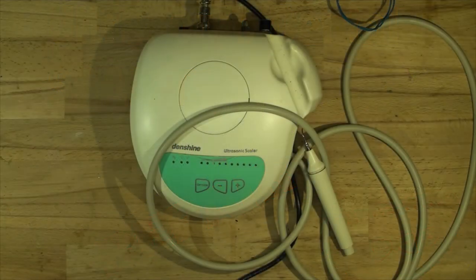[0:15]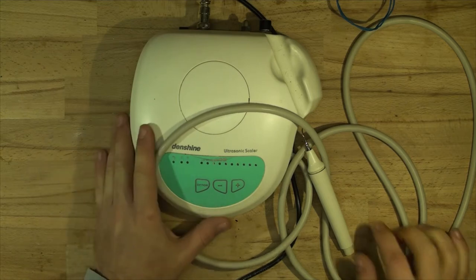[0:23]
Today we have on the bench an Ultrasonic Scaler by Denshine. This device is used for removing plaque and calcium from teeth using this tip.
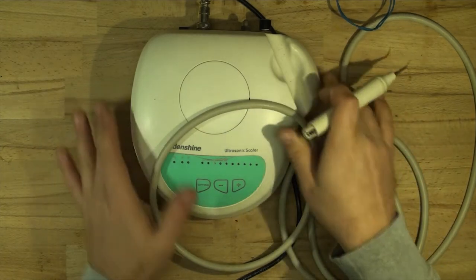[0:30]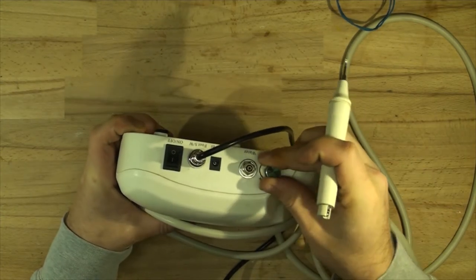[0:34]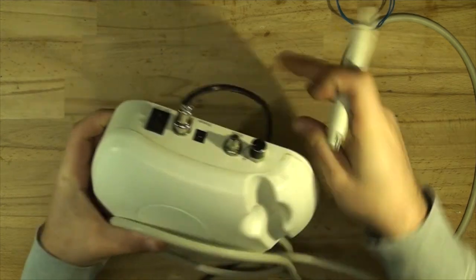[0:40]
So it's got a water input here. This is the adjustable water pressure. I would say this is more of a valve. It's not electronic, it's just like a little tap. Power button, and that's a foot switch, which is right here.
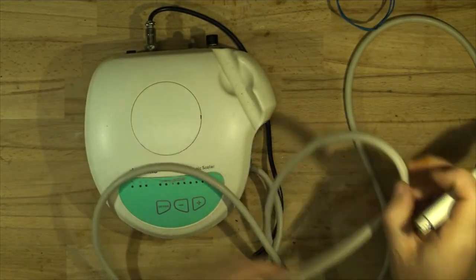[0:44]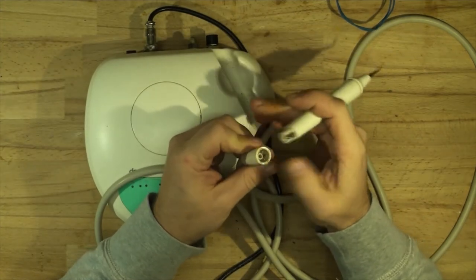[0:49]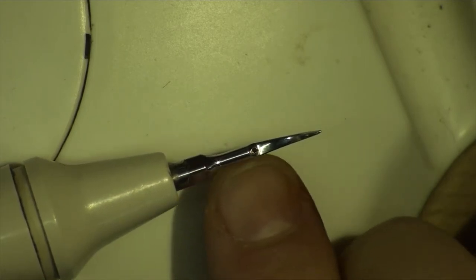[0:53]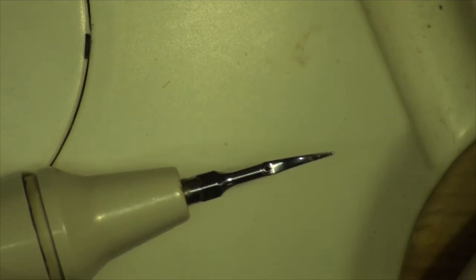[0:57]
And all this connects to this head, which has got three pins and a little water pipe. And the water comes out of the tip right here. So there's a tiny little hole there, and that vibrates at around 40 kilohertz, removing the plaque.
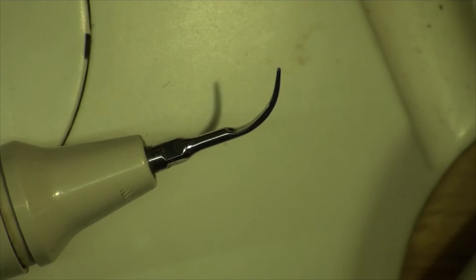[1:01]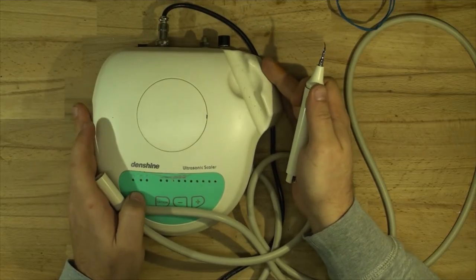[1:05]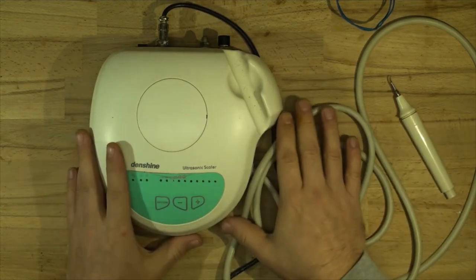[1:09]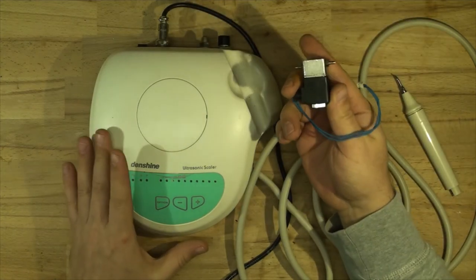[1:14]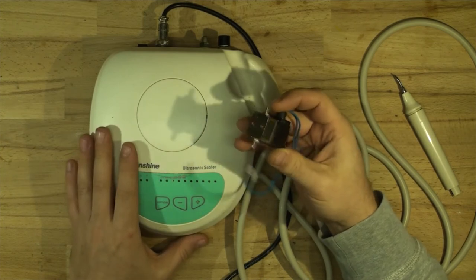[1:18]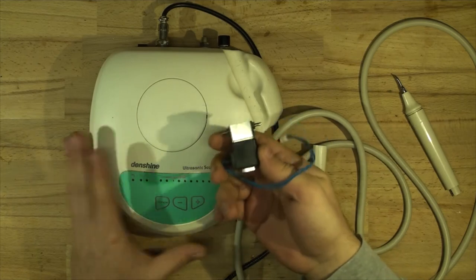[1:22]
I'm not sure if it's meant to be for human use, but this one is actually from a vet clinic. I haven't opened it up, but the doctor said there's a problem with it, and she got a replacement solenoid valve. So I don't know if the valve is the problem or what's the problem inside, but we'll have a look. So that's the valve that she bought. Again, I'm not sure what the problem is.
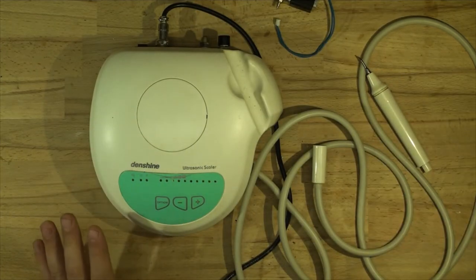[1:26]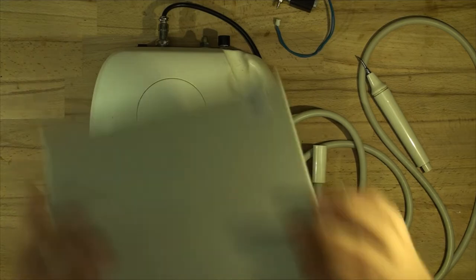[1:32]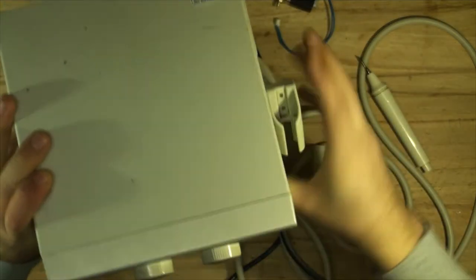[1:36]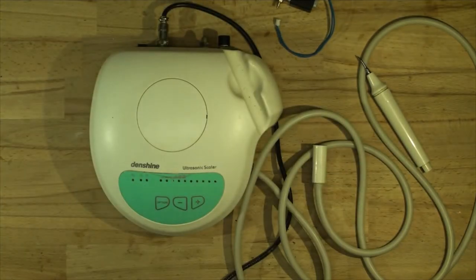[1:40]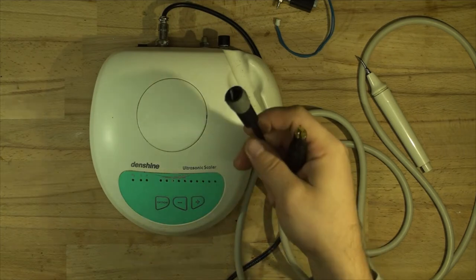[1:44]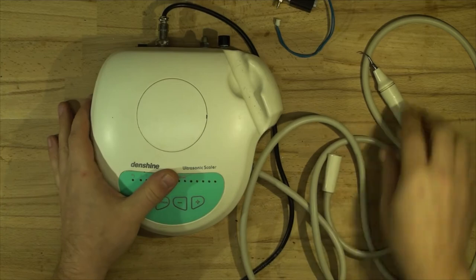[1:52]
And I have another one here, which is an older version. Let me just get it. It's bigger. It's got big controls. It's heavier, so it's obviously got a linear power supply. I can tell from the weight. The problem with that is that the little connector's broken off, so we'll have to find the pinouts for it, and we'll see if this one will work. So let's open it up and have a look what's inside.
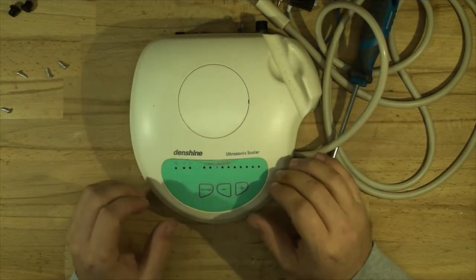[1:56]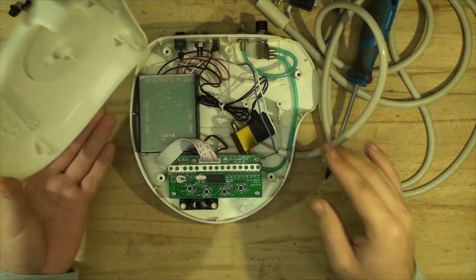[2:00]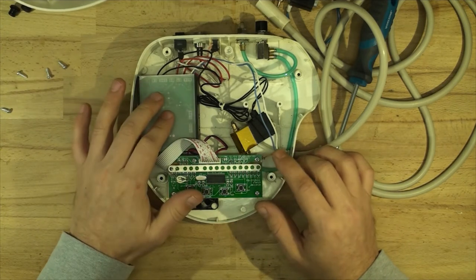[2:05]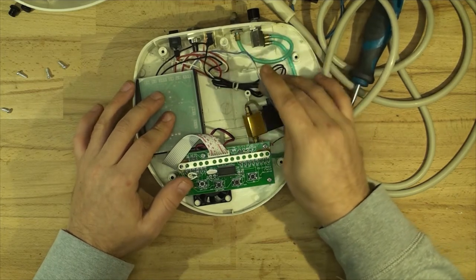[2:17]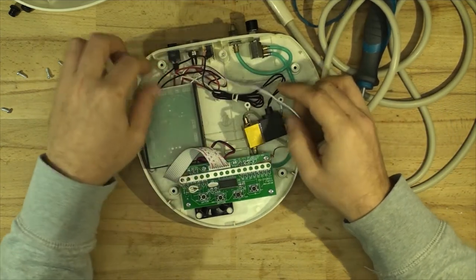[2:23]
I've removed all the screws, and I haven't taken this off, so we're going to be taking this off together. Oh, so by the look of it, we've got a switch mode power supply. We've got that solenoid valve, which is just loose for some reason. It shouldn't be loose, but it is. It looks like the correct one, but I don't know if there's a problem with it. We'll have to test it out.
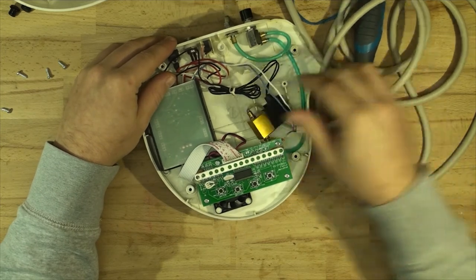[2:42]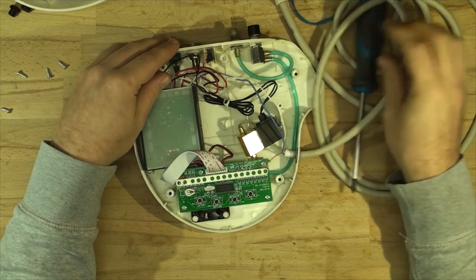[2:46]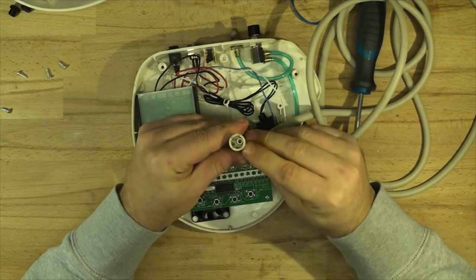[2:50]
What else do we have here? Two wires. There are three contacts, however, on this thing, and no ground. This looks like just a little rope to make sure that you don't overstretch it. So that's the power supply for the head itself. I've also noticed that there is a corroded connection inside, so we'll clean that up.
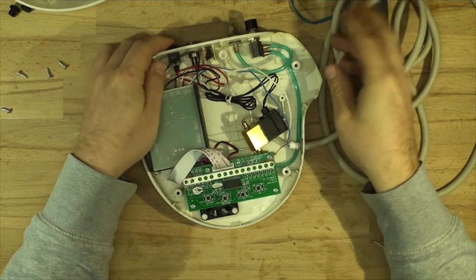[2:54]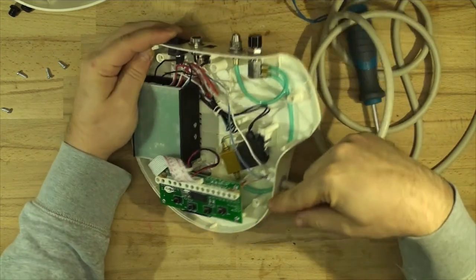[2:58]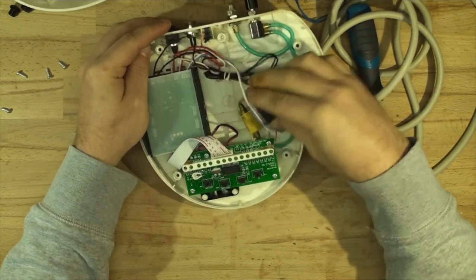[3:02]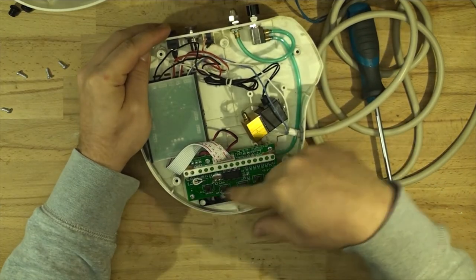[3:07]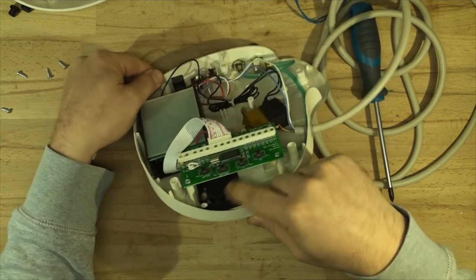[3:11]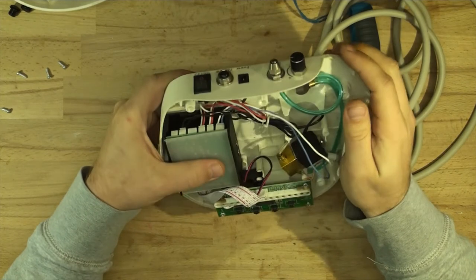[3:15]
Water comes in, goes through this little mini tap, and goes to this valve. And from the valve, it goes straight to the nozzle. This is the controller that controls the actual volume. There's a little fan underneath here. Actually, everything looks in good shape. So that's definitely a switch mode power supply.
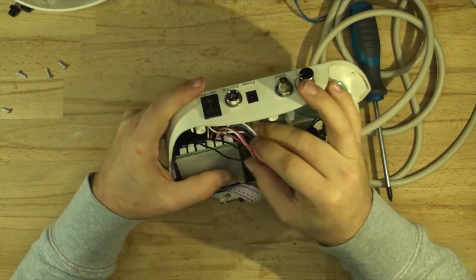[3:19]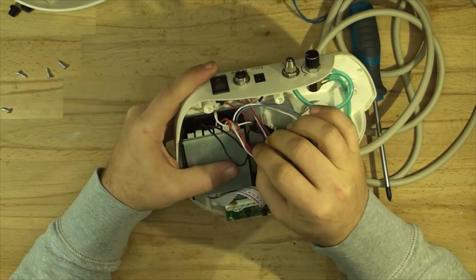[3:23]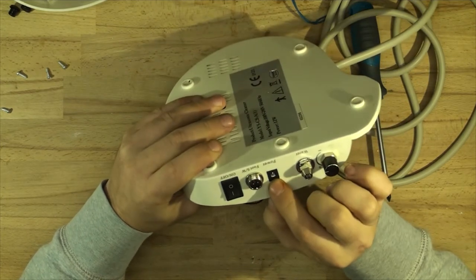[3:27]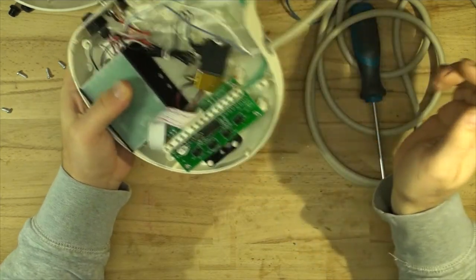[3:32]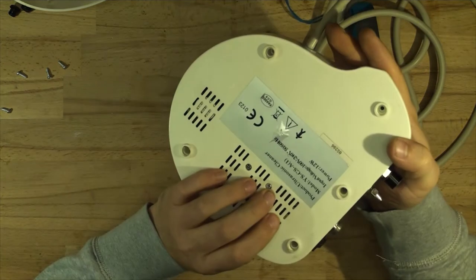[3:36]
Foot pedal. It's got a lot of connectors. It looks like it's a universal one. You can also connect. That's the power. So we do need a power supply. It says 240, but obviously it's not 240. I wonder what the power is. 12 watts.
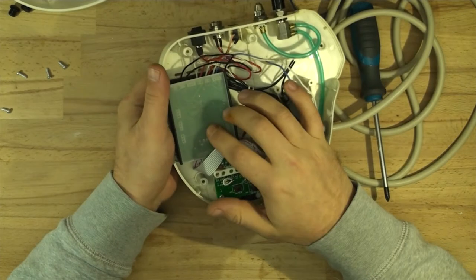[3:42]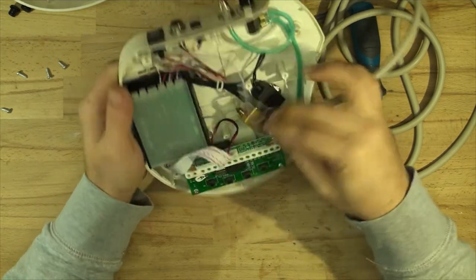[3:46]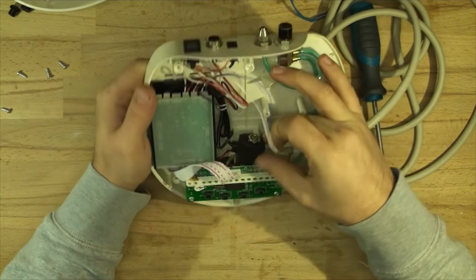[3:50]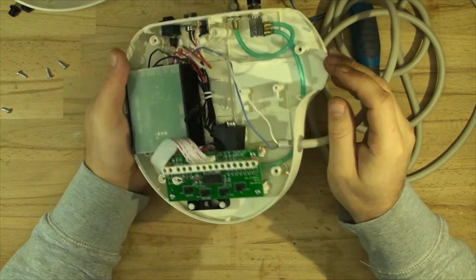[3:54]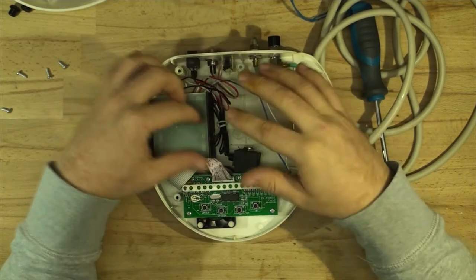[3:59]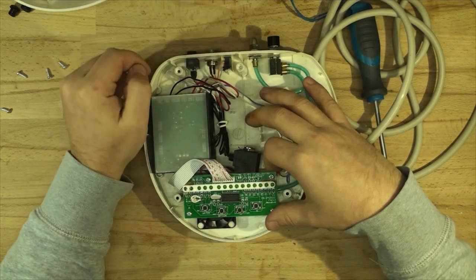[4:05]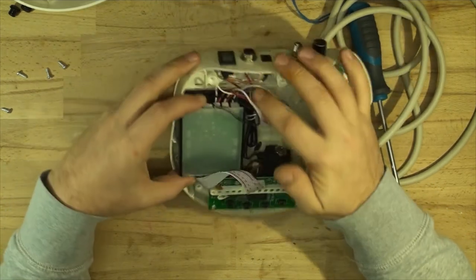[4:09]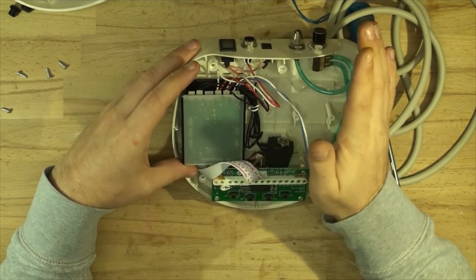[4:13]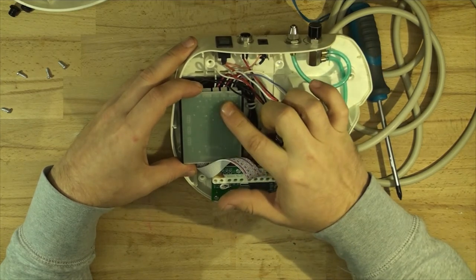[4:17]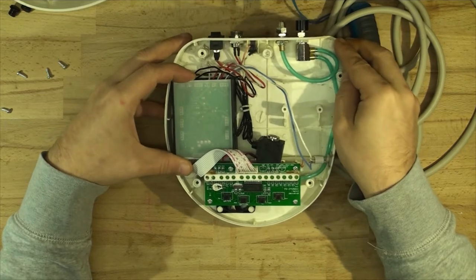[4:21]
I can probably have a look inside at the capacitors and see what sort of power supply there is. Yeah, that looks like it. So let me just open this up and have a look at what power supply this should be. I reckon it's maybe 12 or 24 volts. How I will determine it is I'll have a look where the input is and where it goes to. If it goes straight to a capacitor, that means we've got a DC voltage. If it goes through a bridge rectifier, that's an AC voltage. Then you have a look at the value of the capacitor and surrounding components, and you can determine what the power supply is supposed to be for that thing.
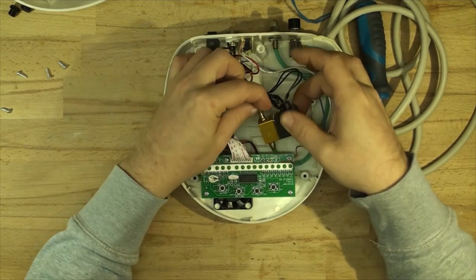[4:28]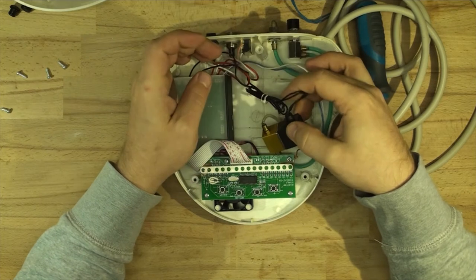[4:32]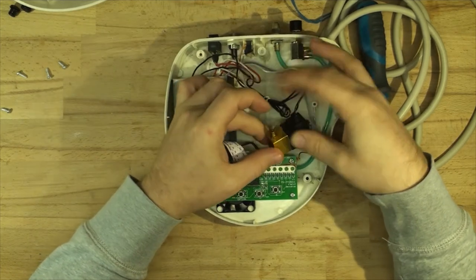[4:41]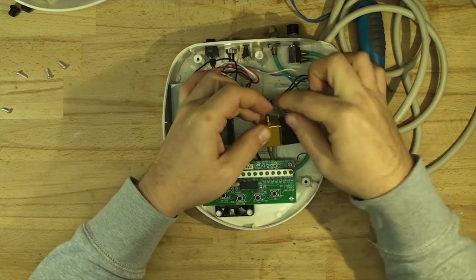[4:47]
The next thing we're going to do is check this solenoid valve, which is very easy to do. Just blow in one side and see if it leaks. If it doesn't, apply power to it, probably separately, and see if it opens up. If it does, then the solenoid valve is good. Obviously, that tube is crinked up, and that needs to be cut off and probably reseated there.
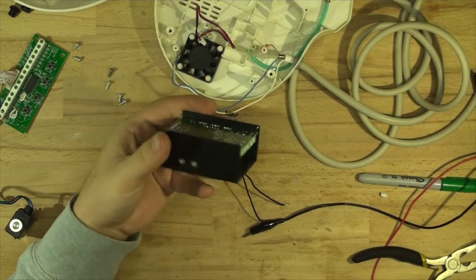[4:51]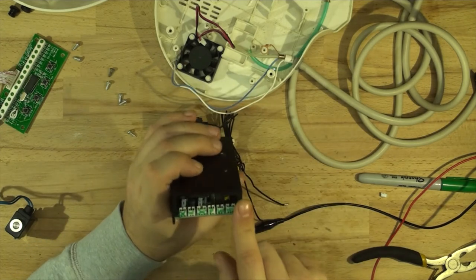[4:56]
Here's the power supply out of the enclosure, and it's safe to say that this power supply is 24 volts. The main input goes straight to the capacitor, and that means it's DC voltage. And also the caps are rated at 50 volts.
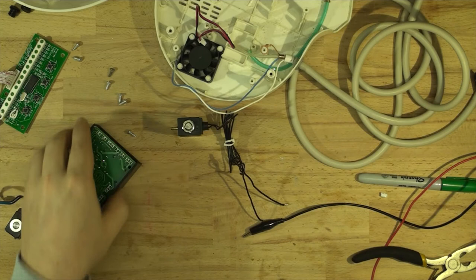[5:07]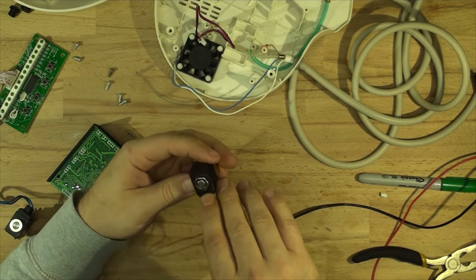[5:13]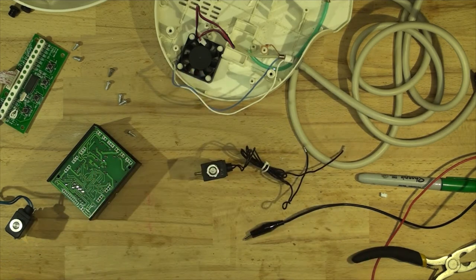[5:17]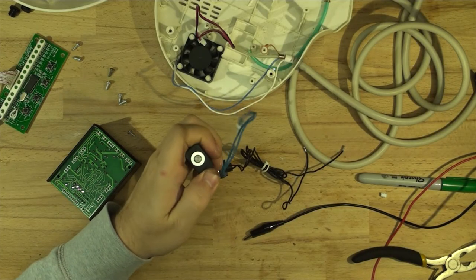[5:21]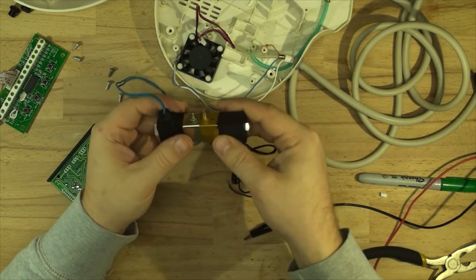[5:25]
The other little hint that we have is the solenoid itself, which I have removed and we're going to test in a second. It says on it DC 24 volts. So obviously the device is 24 volts. This new solenoid, however, I've noticed says DC 30 volts. So that may not be suitable. And also, if you compare, it doesn't really fit.
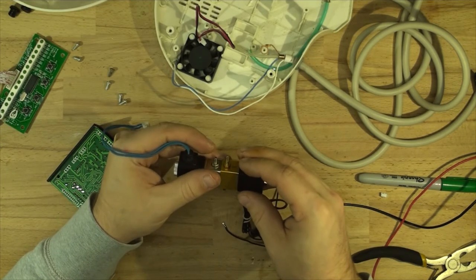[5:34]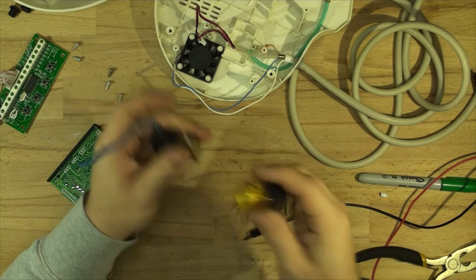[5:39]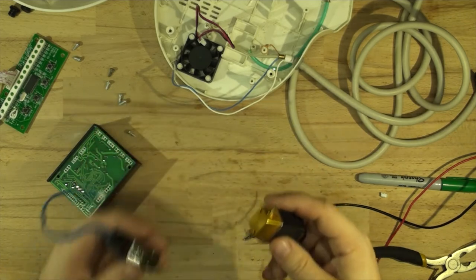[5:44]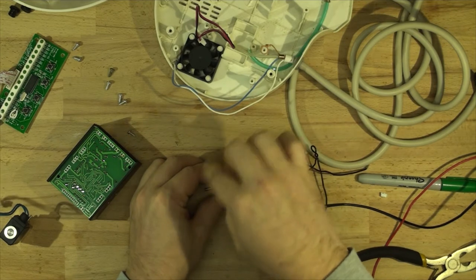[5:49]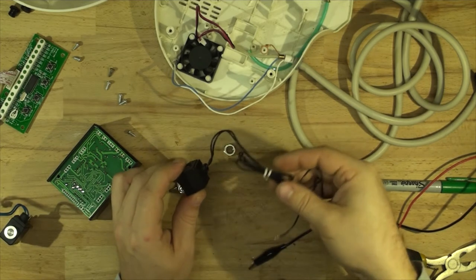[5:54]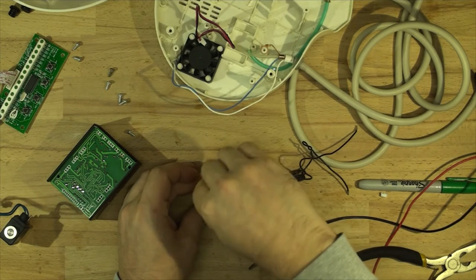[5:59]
First of all, the hole diameter is a lot smaller on the new one. The output tube size is the same, but the input tube is larger on the original, and that would have a lot more water flow through it because the output tube's diameter is a bit large as well. Those electromagnets are removable, and we're left with just a solenoid. So we're going to be keeping the original electromagnet. First, let's test if it works. I've got a 24-volt DC power supply, and we'll hook it up and see if it clicks.
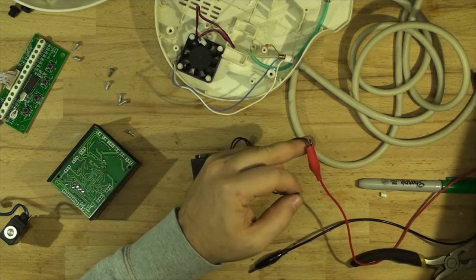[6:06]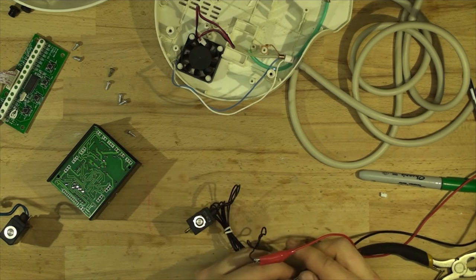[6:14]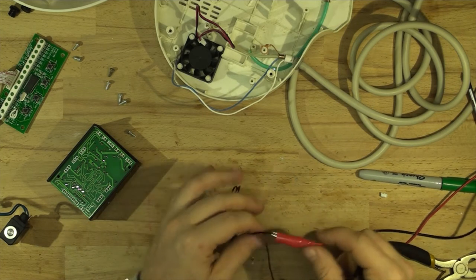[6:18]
All right, so here we go. Yep, the solenoid works. Excuse the heater in the background. Just turned on, it's been freezing cold here.
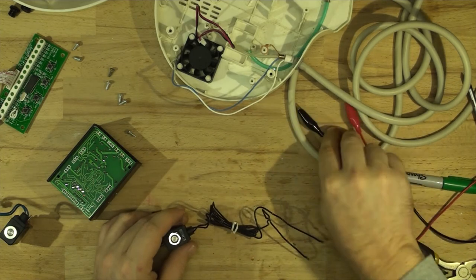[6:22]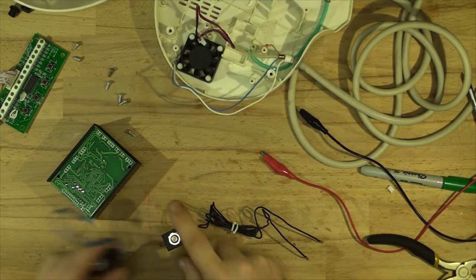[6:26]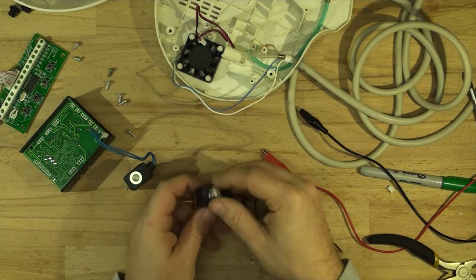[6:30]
So let's get the solenoids apart. I'll take the coils off. Let me turn the heater off. So let's take that electromagnet off. And I'll probably be using this nut. It's actually more, it looks like...
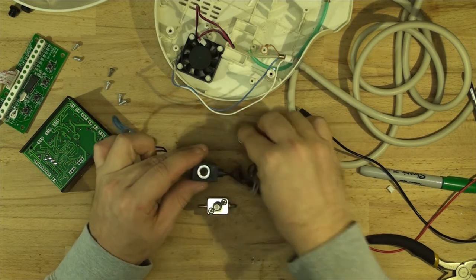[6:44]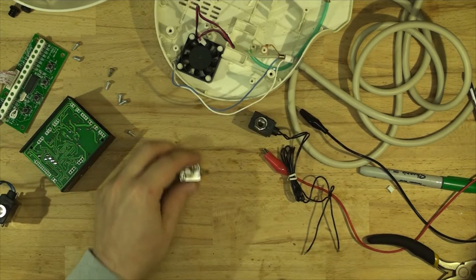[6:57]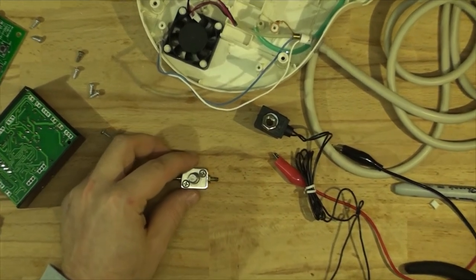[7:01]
It looks like someone's already been inside this solenoid because the nut was the wrong way around. It was this way up and it was threading into the plastic, which should be this way, because you can see it's got that little lip. So we'll pull apart this existing solenoid and we'll have a look. I'll zoom in for you so you can see better what I'm doing.
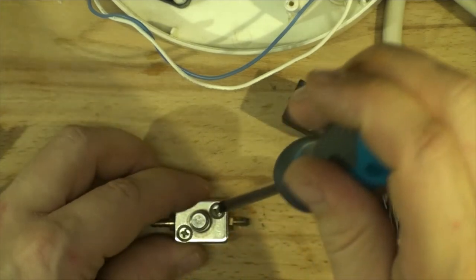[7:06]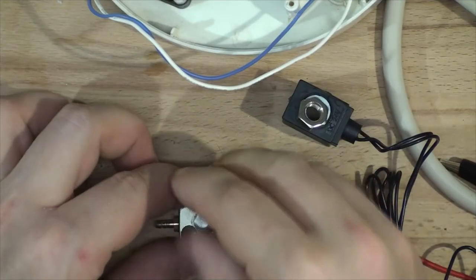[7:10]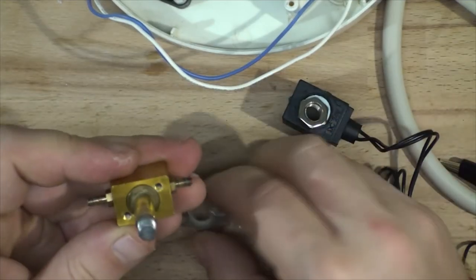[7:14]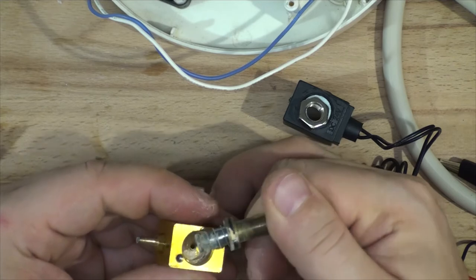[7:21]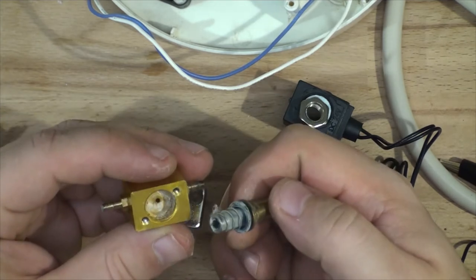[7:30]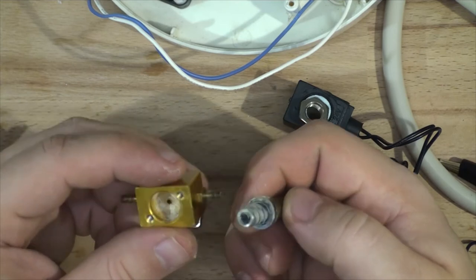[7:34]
And let's have a look what's inside. It probably just needs cleaning. I doubt it's faulty. So we'll carefully remove the top. And it's all gunked up. As you can see, the solenoid is good. It's just very, very filthy dirty. So we'll clean this all up, and that should be working just fine.
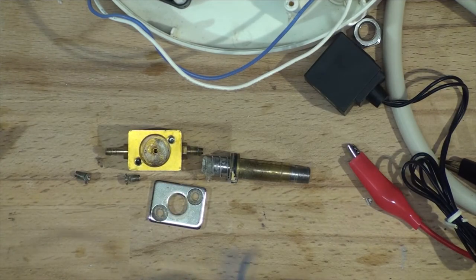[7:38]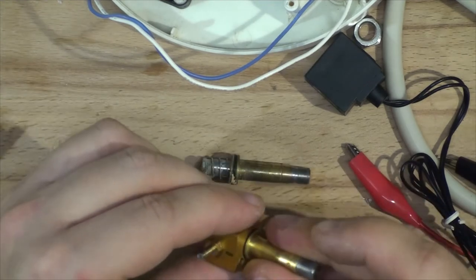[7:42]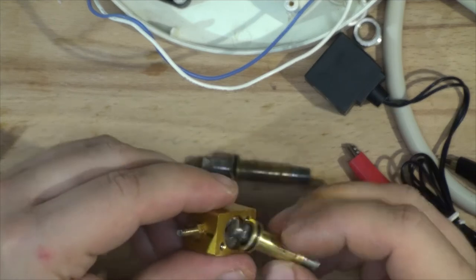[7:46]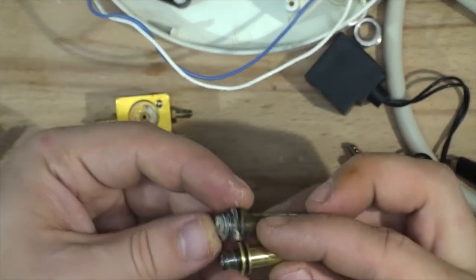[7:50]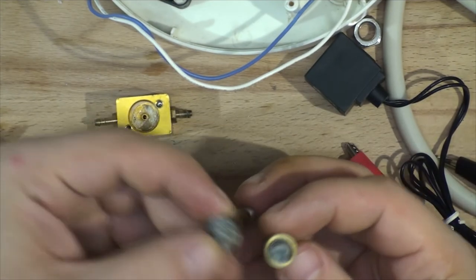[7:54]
Well, let's pull apart the good solenoid. Obviously, the coil we won't be using. So it looks... yes, it looks like it's just a direct swap. They look identical. Same size, same valve, same everything.
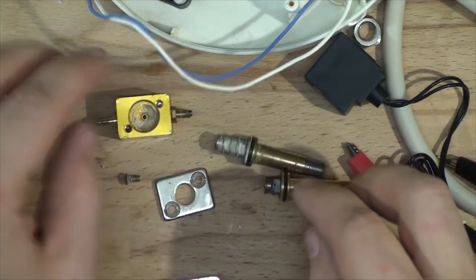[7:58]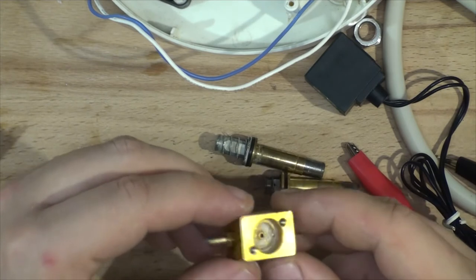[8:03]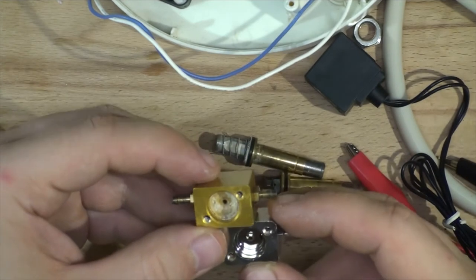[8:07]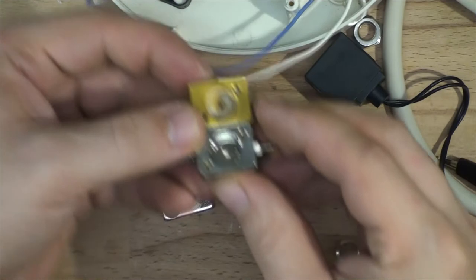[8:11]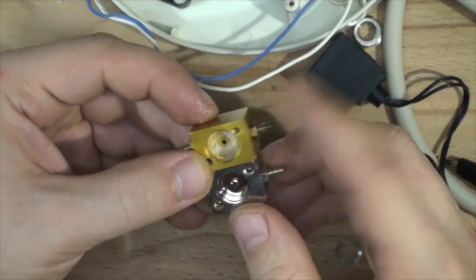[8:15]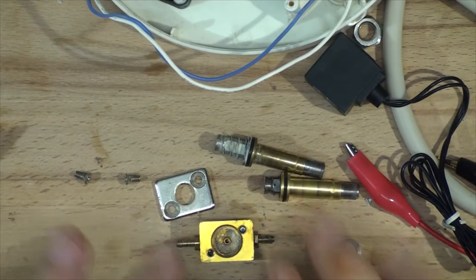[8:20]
So what I will be doing then, I will be cleaning this body. It's definitely clogged up with all sorts of stuff in there. That's a new body. And yeah, the diameter of the hole is definitely larger in the older one. So that's why we will be using the old body. So I will clean this all up and I'll return.
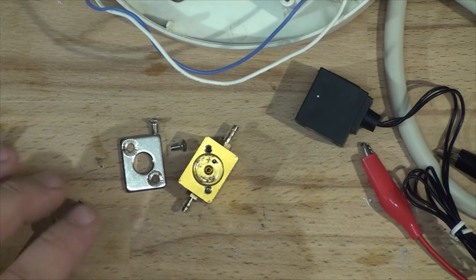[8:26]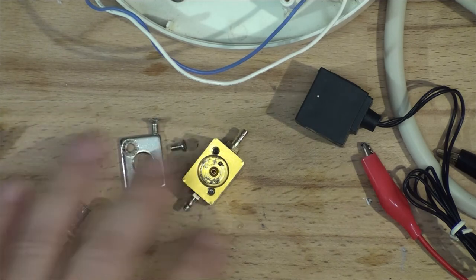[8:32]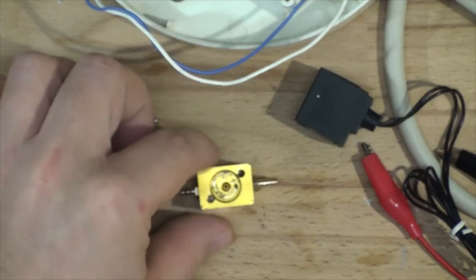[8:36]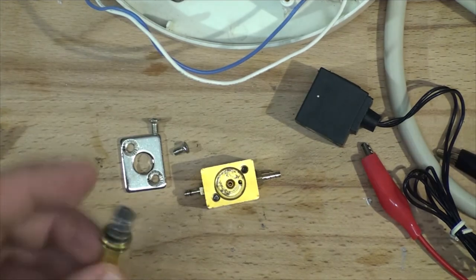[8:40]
I've submerged the whole assembly, the whole block and the lead in a CLR, which got rid of all the calcium buildup. I've verified the flow, it's flowing well. There's a bit of a discoloration inside, but that's just aesthetics. So what I'm going to do, I'm going to take this new valve and put a little bit of oil around the rim. This will help it seal better. Just a finger rub.
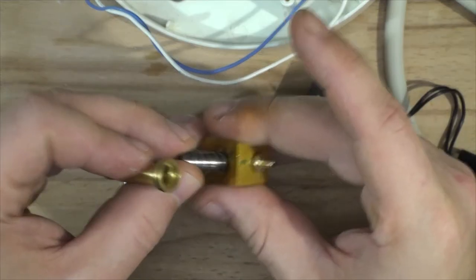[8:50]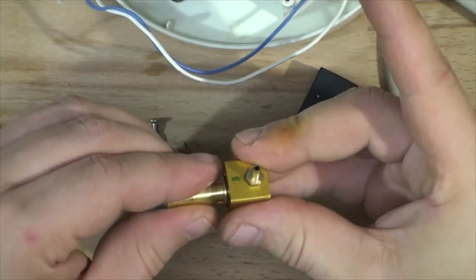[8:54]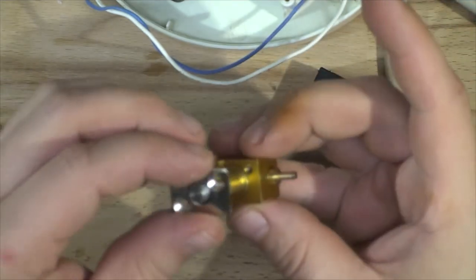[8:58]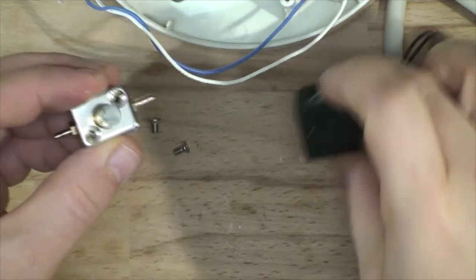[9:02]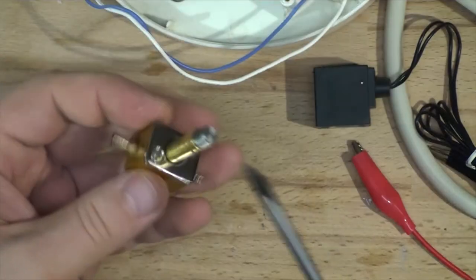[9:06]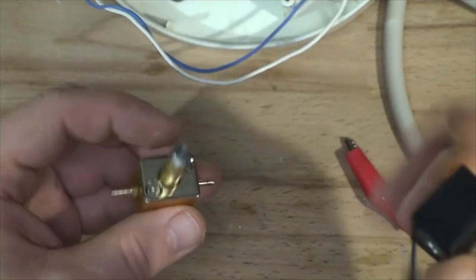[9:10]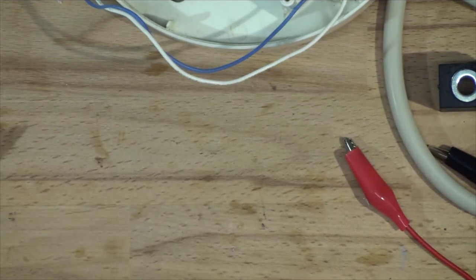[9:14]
So let's assemble it. And I've got the new screws from the new coil. That'll look really nice. Make sure the screws are nice and tight. So I'm just gonna blow in it just to verify. Yep, it's sealed.
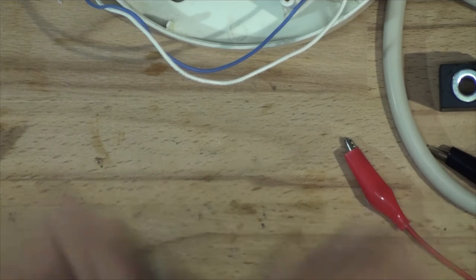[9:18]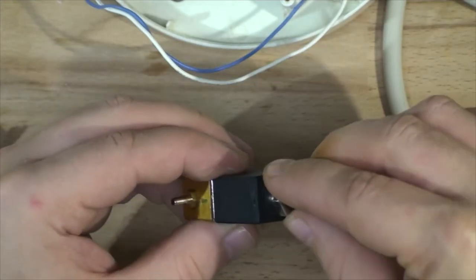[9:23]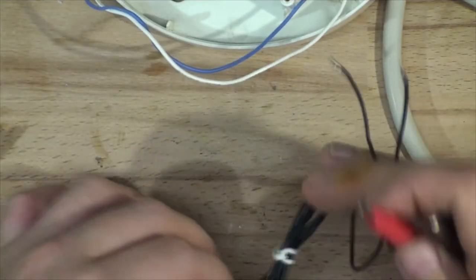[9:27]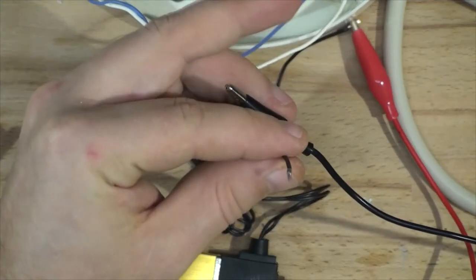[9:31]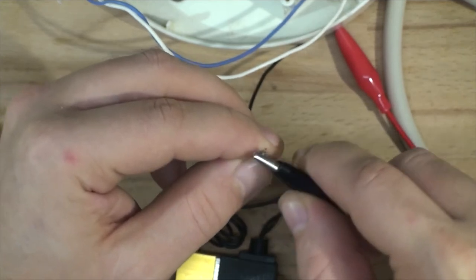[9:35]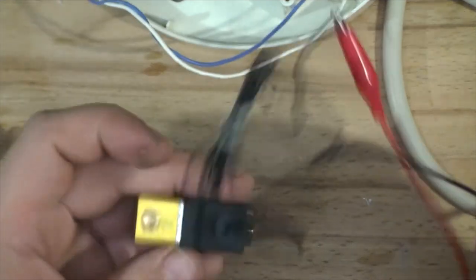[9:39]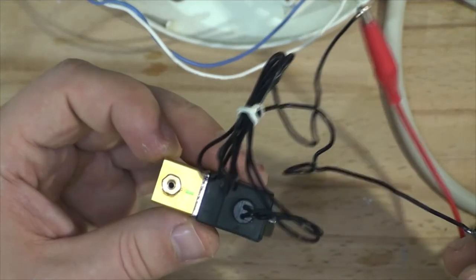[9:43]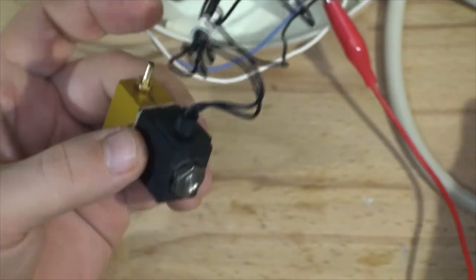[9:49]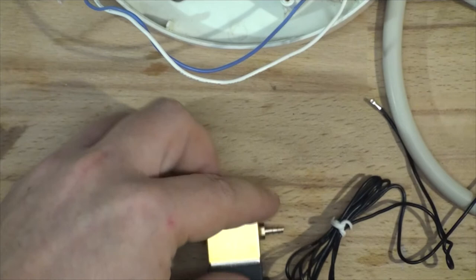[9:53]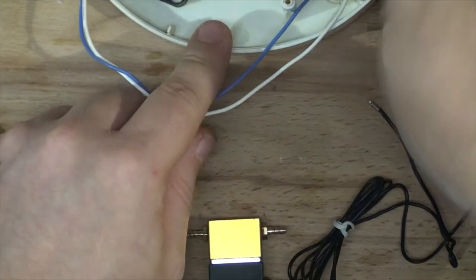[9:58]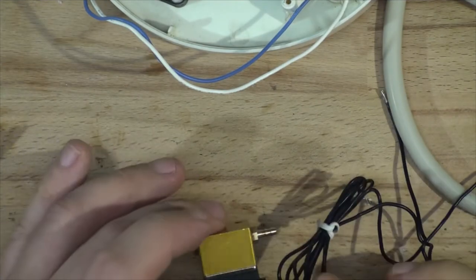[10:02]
So let's add the coil. And let's try powering it on, see how well it works. So we've got 24 volt DC. And I'm gonna energize it and blow through it. You can hear it clearly, air is coming out of it, which it didn't before. And of course now it's closed. So the valve is fixed. I will be blowing through this assembly just to make sure there's no clogs inside there. So I'll do this and then we'll start reinstalling the valve.
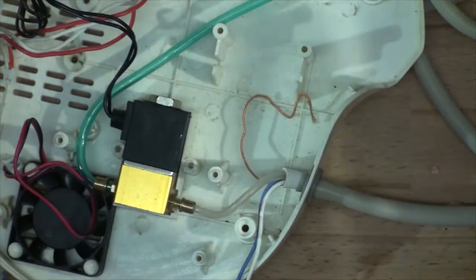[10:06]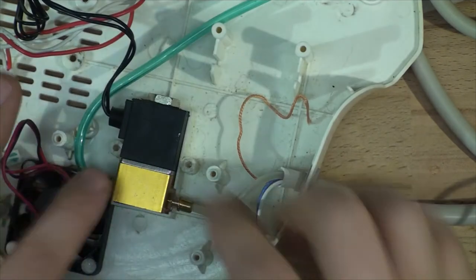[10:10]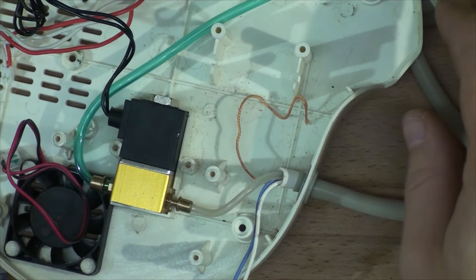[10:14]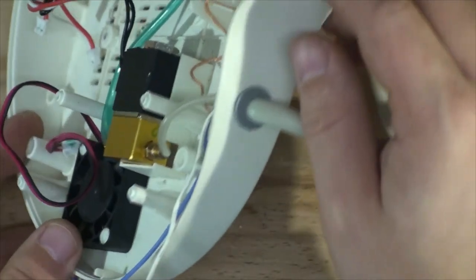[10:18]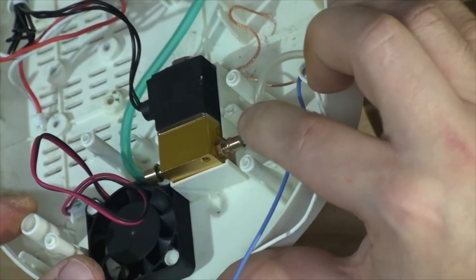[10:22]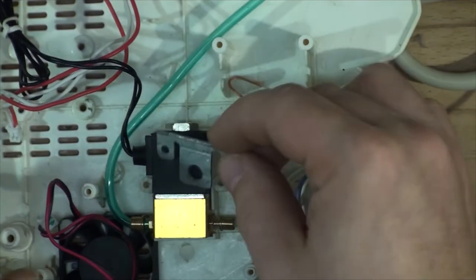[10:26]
I fitted the pipes onto the solenoid valve and placed it where it's supposed to be. However, there's a bracket missing. Well, there's supposed to be something on top which is missing, and two screws wouldn't be long enough. You can see there's a bit of a distance right there, and they are broken off both sides. So luckily I found a bracket that fits just well.
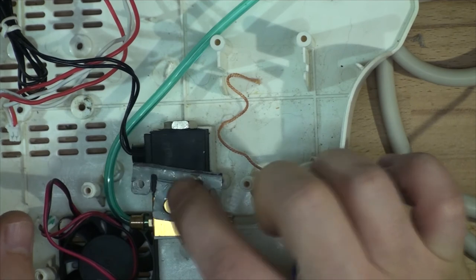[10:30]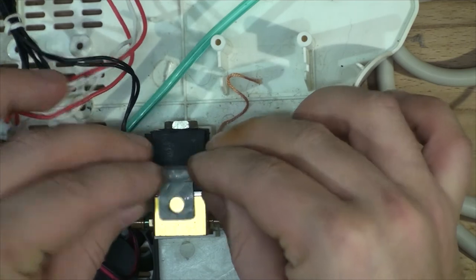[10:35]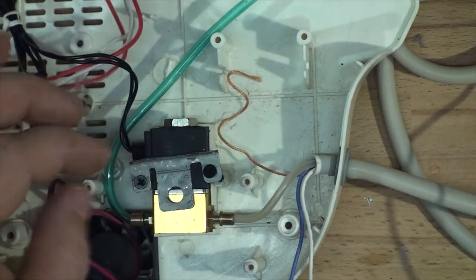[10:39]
It's actually from a computer, or from a server to be honest, and the sizing of the holes are a perfect match. So I found two screws that we're going to be using to mount this with, and I will assemble the whole thing together and then we'll test it out. I won't put the lid on, we'll just test it out as is and see if it works.
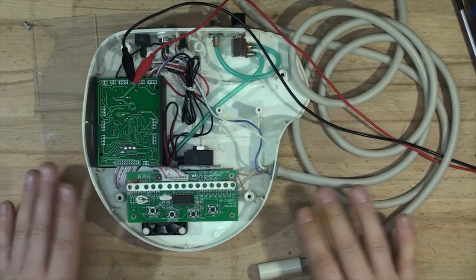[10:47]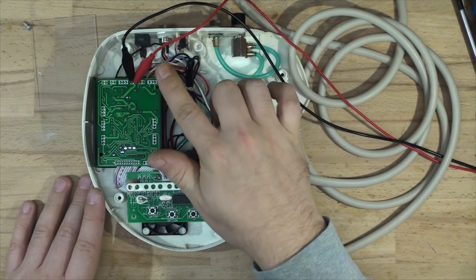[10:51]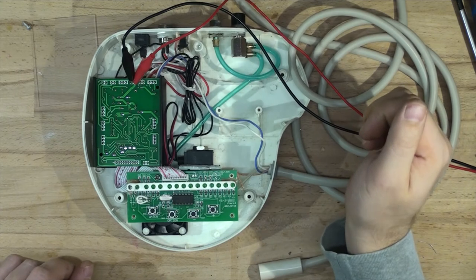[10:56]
The device is now assembled, well, almost fully ready to plug in. So I've got 24 volts DC supplied directly to the power supply of the unit. Let's power it up and see what happens. Okay, so it looks like it's working. It's consuming 163 milliamps at the moment. The fan, however, definitely needs to be replaced. The fan is really noisy.
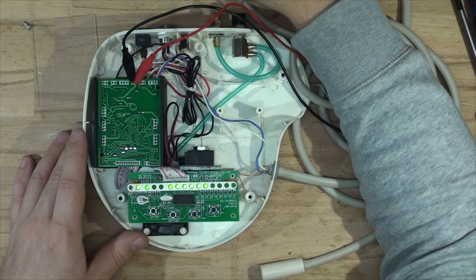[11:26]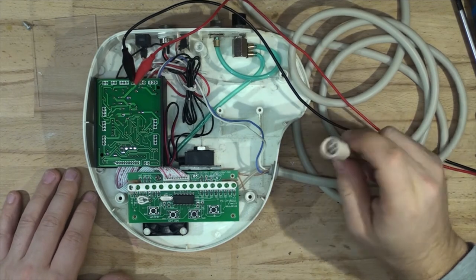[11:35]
Let's try triggering it, see what happens. The valve is working just fine. And yeah, it seems to be working fine. I haven't got the tip on, so we'll scope it as well to make sure. Let me just turn this off. We'll scope this as well to make sure it's got the frequency, and I'll clean the plug here as well. So let me just quickly replace that fan so it's not noisy like it is, and then we'll get the scope out and measure the output on that thing.
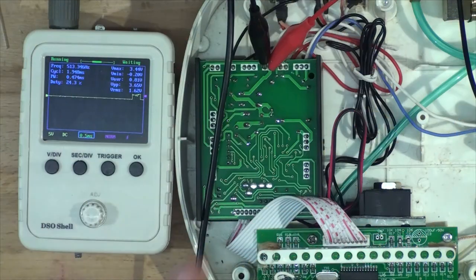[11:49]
I've got the scope ready. I've replaced the fan, so the fan is now nice and smooth. I'm using the portable scope at the moment, so the probe is not calibrated for the scope, so the actual square wave is quite curved. But it doesn't matter, we don't want to see the wave, we know it's there, we just want to see the frequency and make sure the wave is there itself.
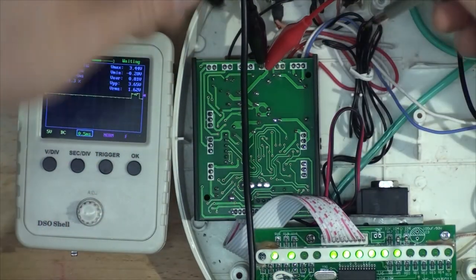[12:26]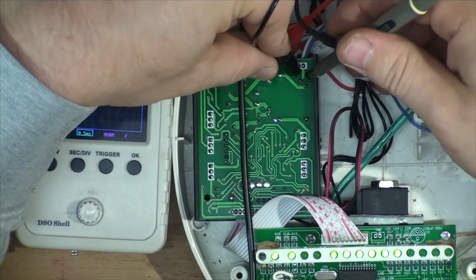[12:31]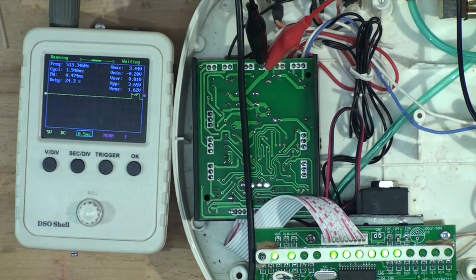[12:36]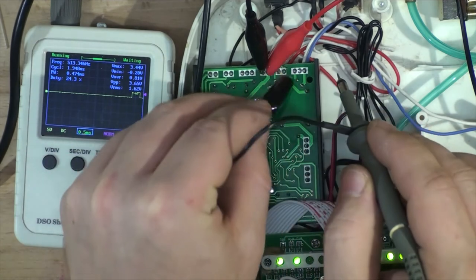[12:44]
So I'm going to power the unit up. There, the fan is a lot quieter if you noticed. So let's now, I'm trying to figure out what would be the best to measure it, probably from here. Oh, you know what, we need to trigger it first, so I'll have to connect the pedal as well. So let me get that on the floor. Okay, I am ready to trigger the output, so let's watch the scope and see what happens.
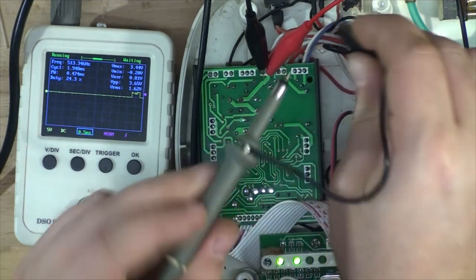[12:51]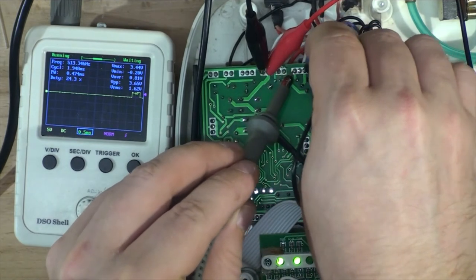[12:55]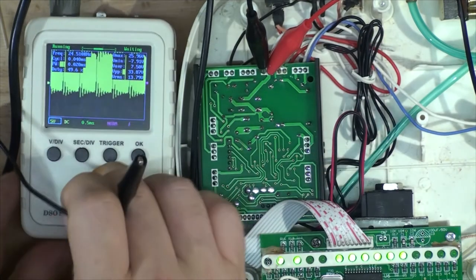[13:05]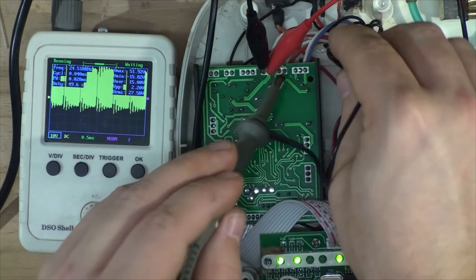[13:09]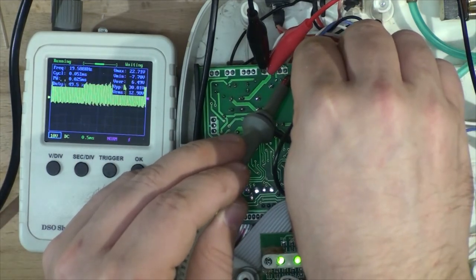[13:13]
And yeah, we got a 20 kilohertz signal, so let's just get it a bit smaller. And let's get the timing.
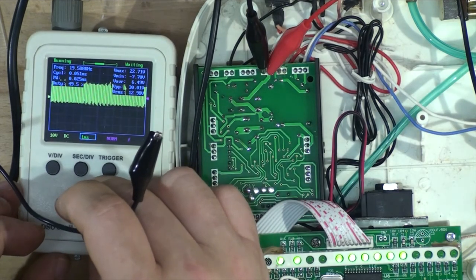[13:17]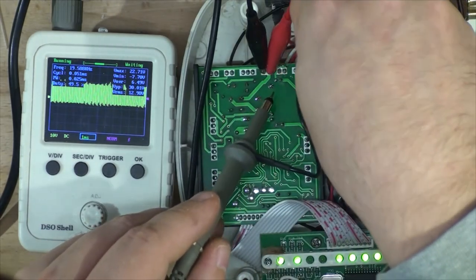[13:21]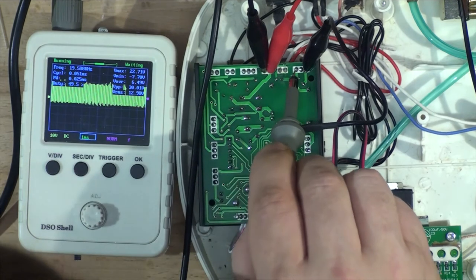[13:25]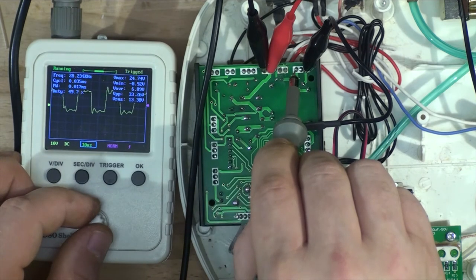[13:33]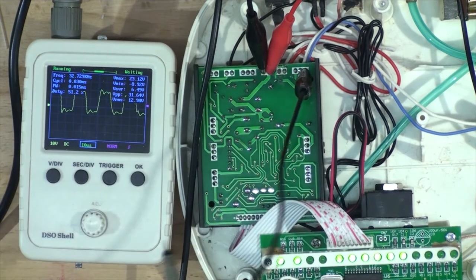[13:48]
So yes, we got our signal at 24 volts, 28 kilohertz, 32. Again, it's not really square because the probe is not really calibrated, but we see the result that it's working, duty cycle 51.2%. So the machine is fixed.
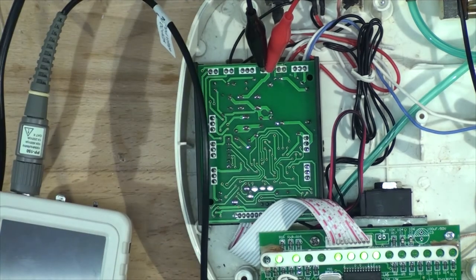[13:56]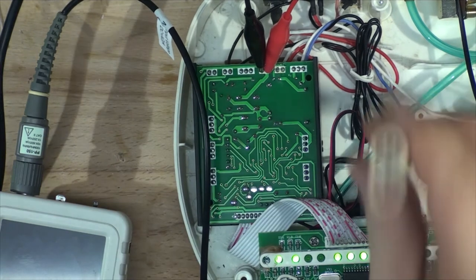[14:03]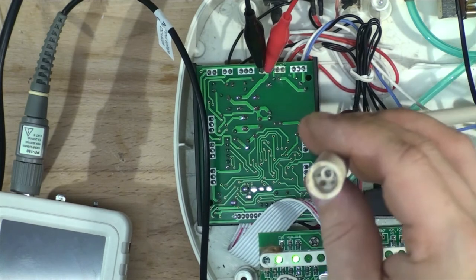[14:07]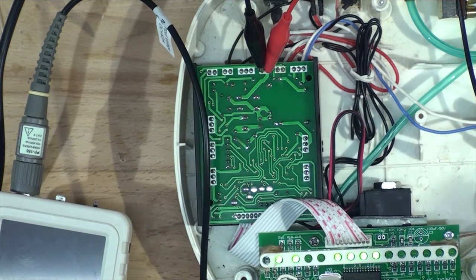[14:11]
Brilliant. So I'm going to put this together, and as a bonus, let's have a look at the second machine. Oh yeah, by the way, I almost forgot, I still have to clean the contacts here. So I'll clean them off the frame, because I'm pretty sure you don't really want to see me cleaning the contacts. So I'll clean them off and then we'll go for... actually, let's plug the nozzle in and see what happens.
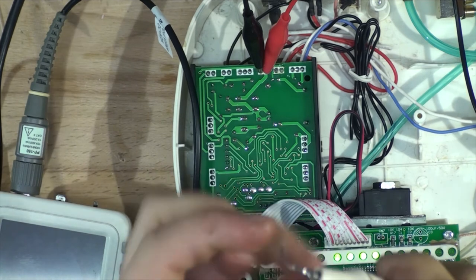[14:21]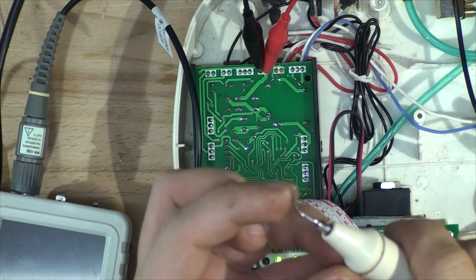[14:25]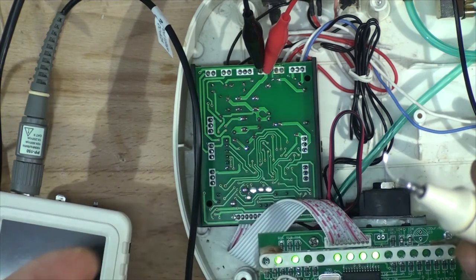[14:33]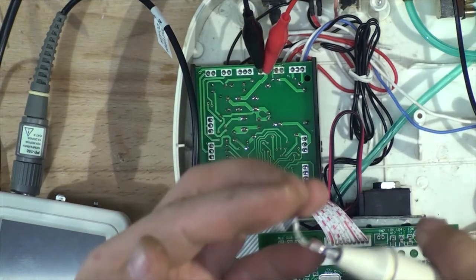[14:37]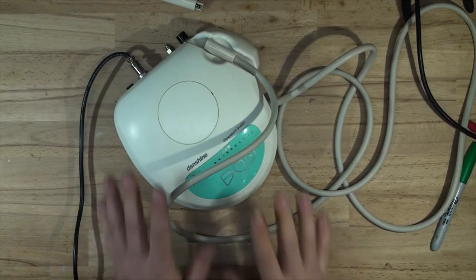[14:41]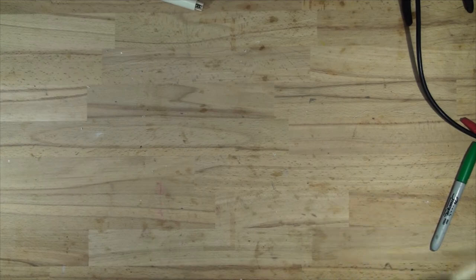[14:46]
Oh yeah. It's burning my skin. So you didn't see that, but yeah, I've touched it and it leaves marks on my skin, so it definitely works. Let's get this unit off the table and put the second one on.
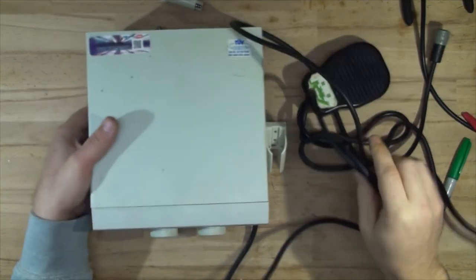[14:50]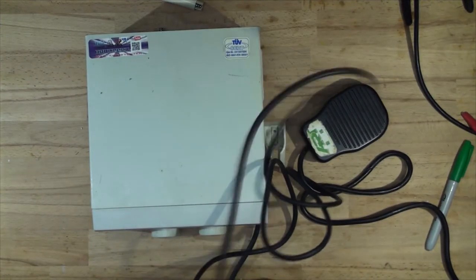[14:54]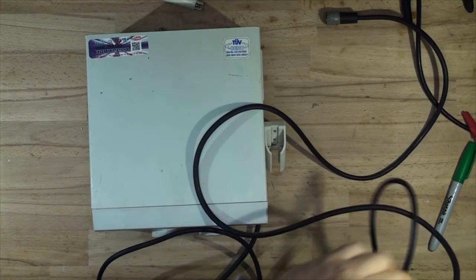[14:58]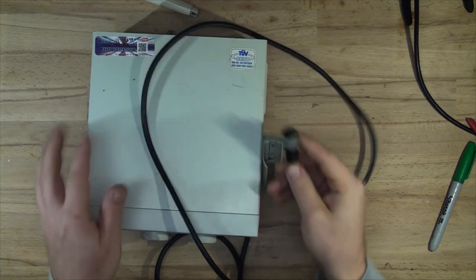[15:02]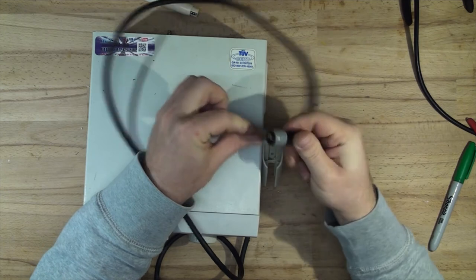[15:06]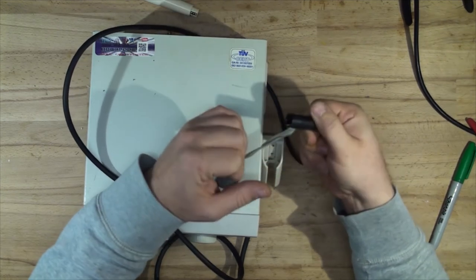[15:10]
And here is the second unit. So it's got a pedal again, which is disconnected. So we'll put that aside if I can get those cords untangled. Okay. Now, this one is missing the plug. Someone obviously tried to fix it, but when they disconnected their original transducer, they ripped out the cords.
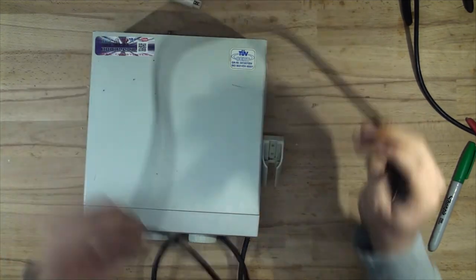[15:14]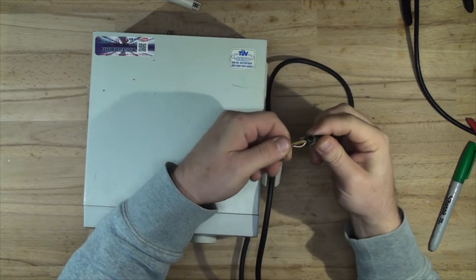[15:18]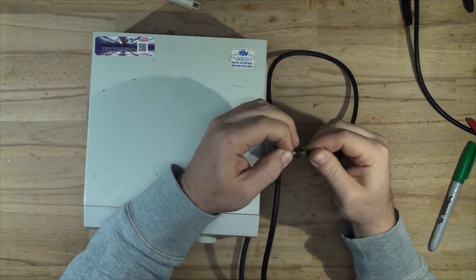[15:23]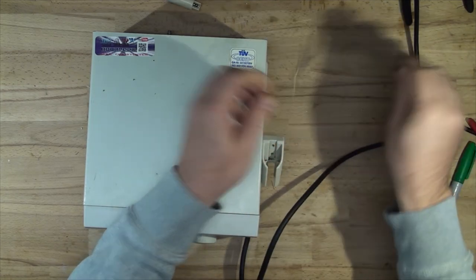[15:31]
So we will have to track down which cord goes where. Obviously, there's three, and the other one was two. This one's got three, and that's the water pipe, which is quite old, but should be enough if we get quite a bit longer. So okay, let's open this up.
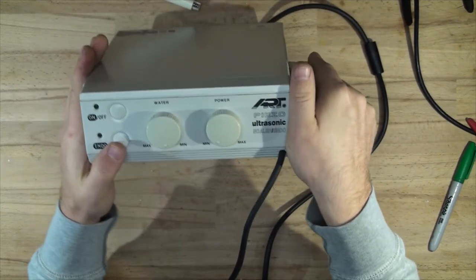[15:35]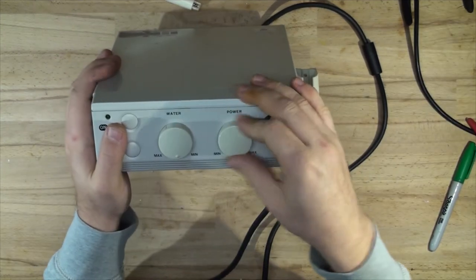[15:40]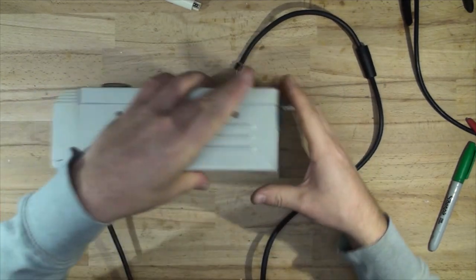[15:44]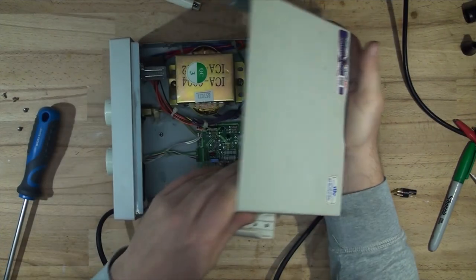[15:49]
This has got an interface. It's got endo. I'm not sure what that is. Power, water, which is just a single normal tap, and the power is just a simple pot. So let's take the cover off. So here comes the cover.
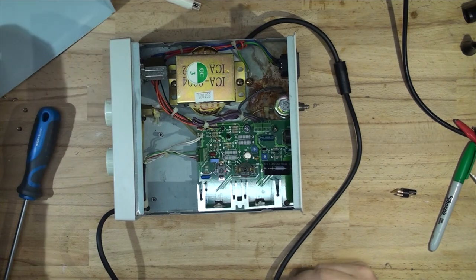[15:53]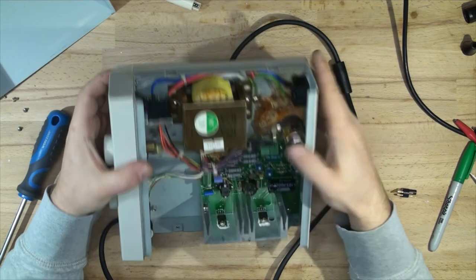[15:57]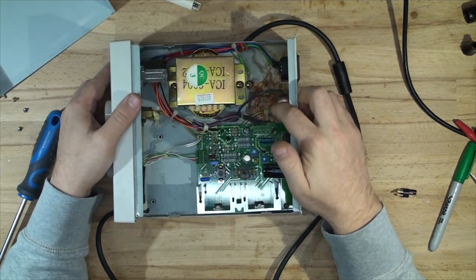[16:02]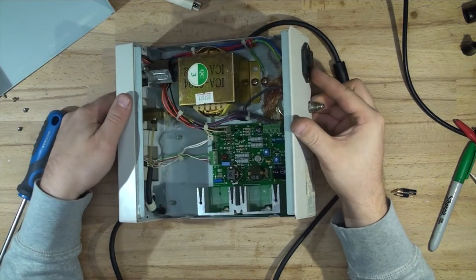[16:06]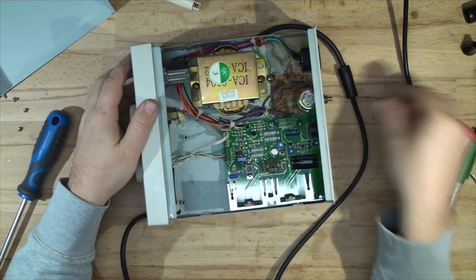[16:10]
And what do we have? Looks like there's a leak of the pressure regulating valve, which we'll have a look at. And just like expected, we've got this tube going straight into the end of it.
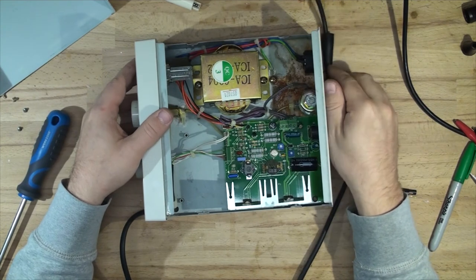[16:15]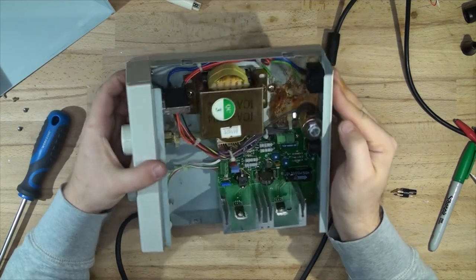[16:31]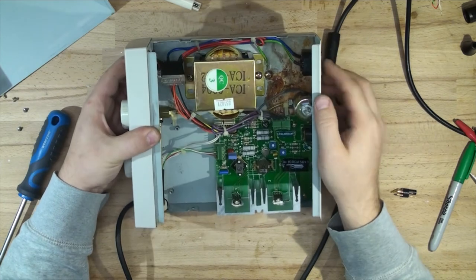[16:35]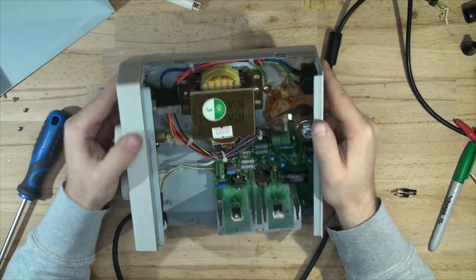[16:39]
We've got the three wires for the transducer, so we've got ground and the power. Simple trim pot with just two wires. Power button, switches, what else? Looks like that's it. So let's go to the linear power supply, which is always good.
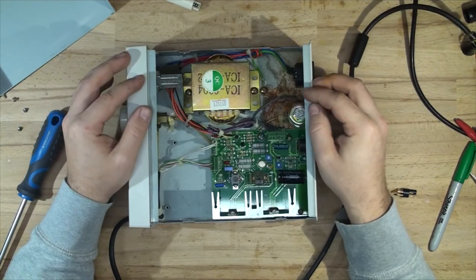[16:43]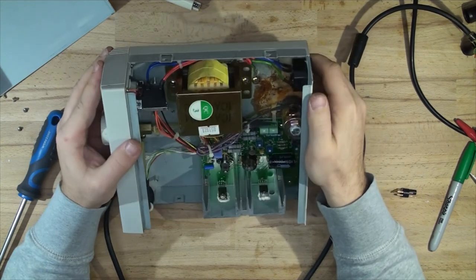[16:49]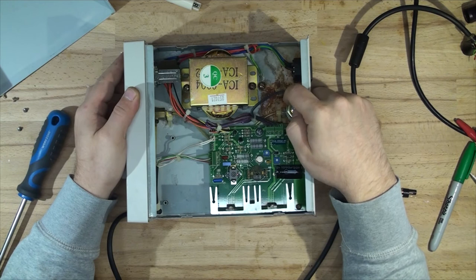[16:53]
So what I'm gonna do is I'll unscrew this valve. That's actually, yeah, that's the valve itself. It's 35 volts DC. And we'll test it out. We'll make sure that that doesn't leak because there is a lot of water around it and corrosion.
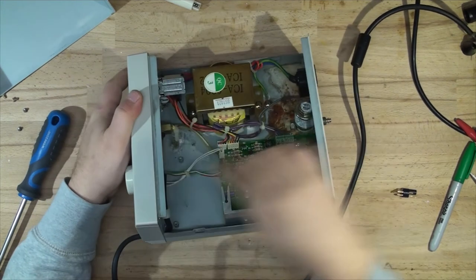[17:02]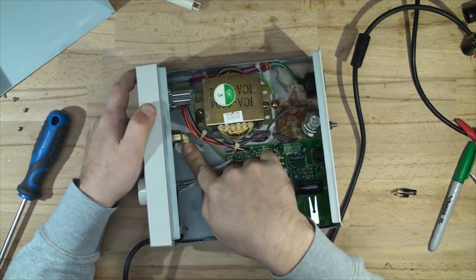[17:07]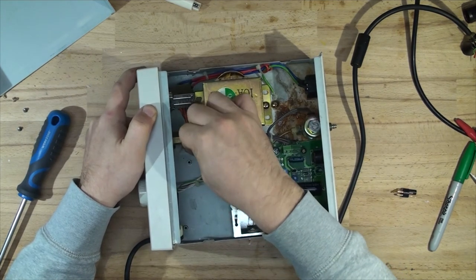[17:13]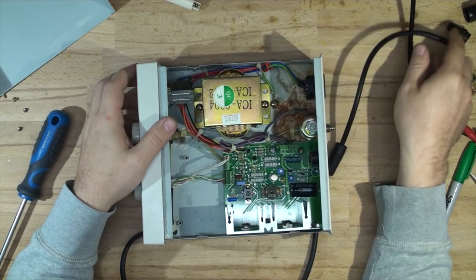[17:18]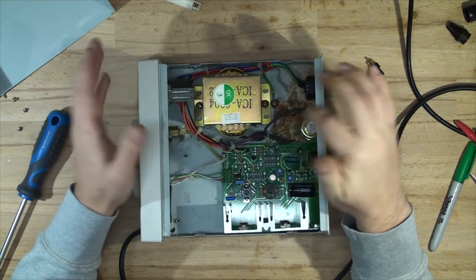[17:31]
There's a little bit of corrosion down here as well, if you can see that, which is probably from dripping out here. Someone tried to fix it by the look of it, unsuccessfully. Yeah, it's all loose. So we'll redo all this. We'll probably have to shorten it by a little bit to get that tube reconnected to this part here that has actually been ripped off. So I'm gonna pause for a sec while I undo this and check the valve and check all those connections. Then we'll reassemble it and solder that on.
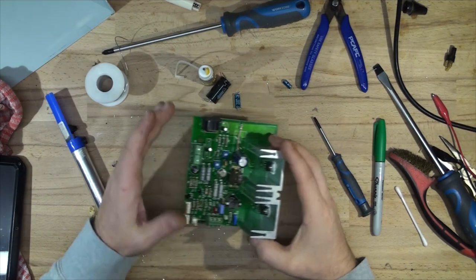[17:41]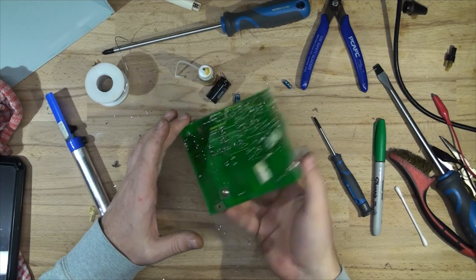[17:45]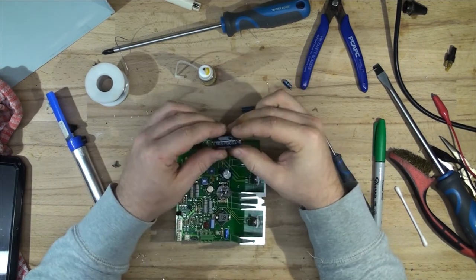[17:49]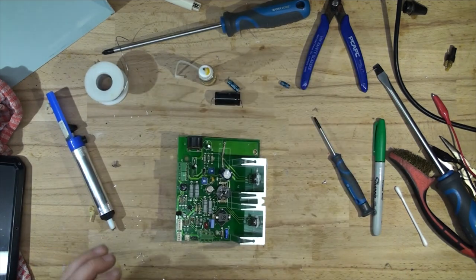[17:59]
I have redone the circuit board. I've cleaned off all the corroded contacts. I've redone the whole back of it, resoldered, tapped everywhere. I've replaced also three caps that were obviously leaking. And I mean physically leaking. I don't know if you can see, it's actually leaking electrolyte. That's only three that there were, so I've replaced them with the new ones.
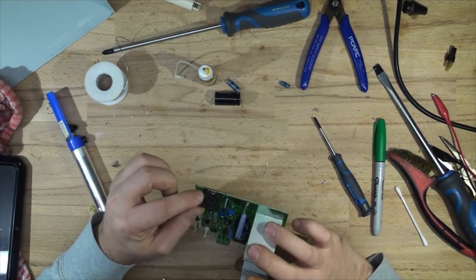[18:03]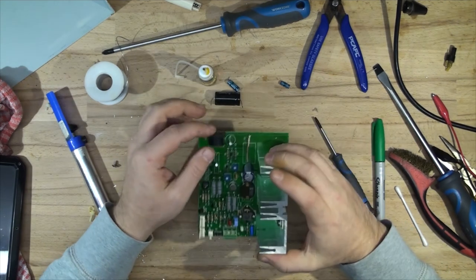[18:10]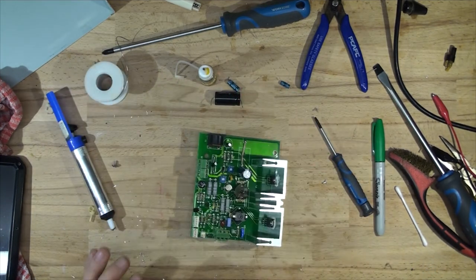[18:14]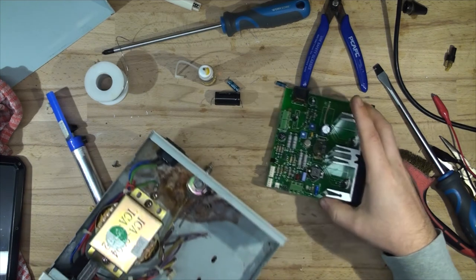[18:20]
The board should be good. I've also redone this, I've removed and redone this contact for the switch pedal because that was so loose. You could wiggle the contacts on the back of the PCB and you can see they wiggled, they weren't even making connection. So that board is done. Let's put it back into the enclosure, solder the plug in and plug it in, see what happens.
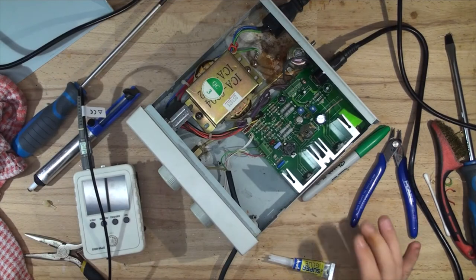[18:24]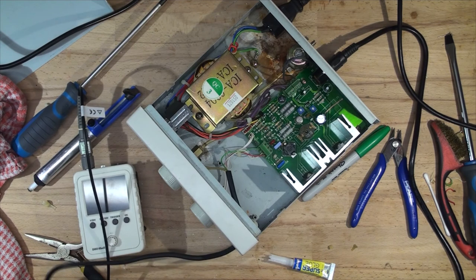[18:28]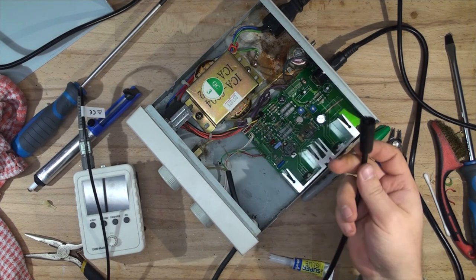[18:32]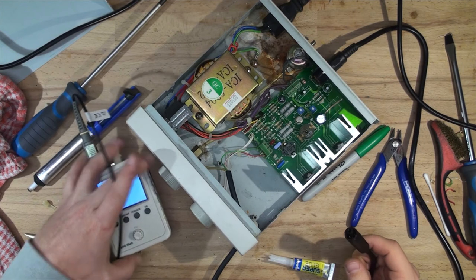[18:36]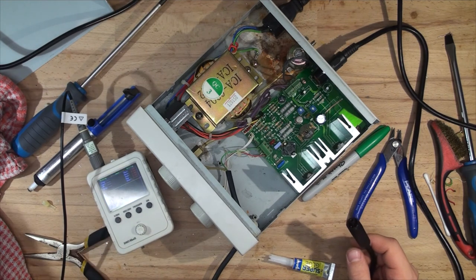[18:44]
So I have completed this project, I think. We haven't tested it yet. Where is the end? I've already attached the plug to it. So plug's here. Let's measure the frequency of the output. So this device is actually 32 volts. The other one was 24. So where is the, there we go.
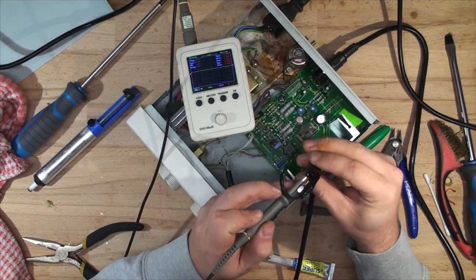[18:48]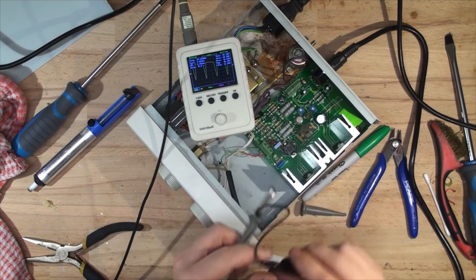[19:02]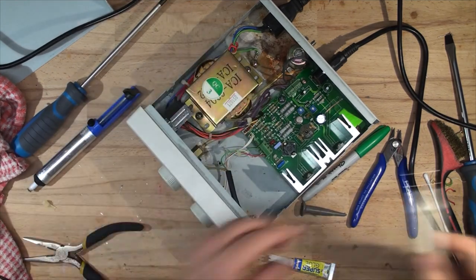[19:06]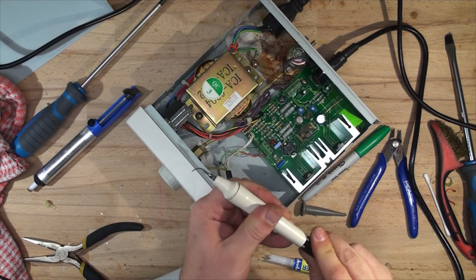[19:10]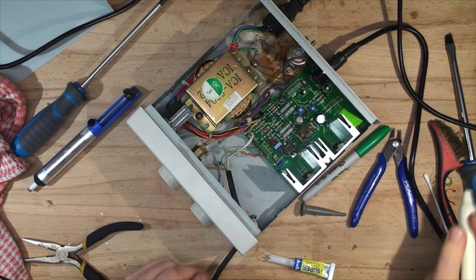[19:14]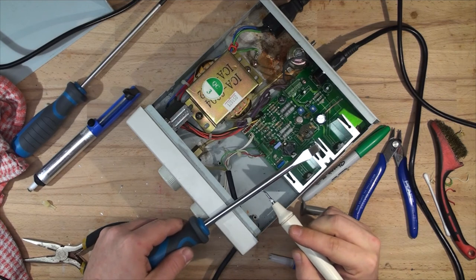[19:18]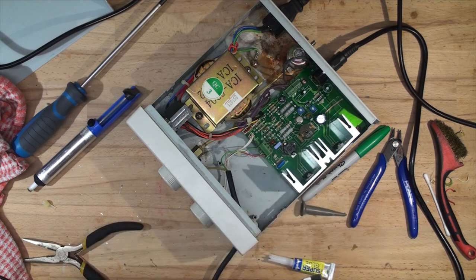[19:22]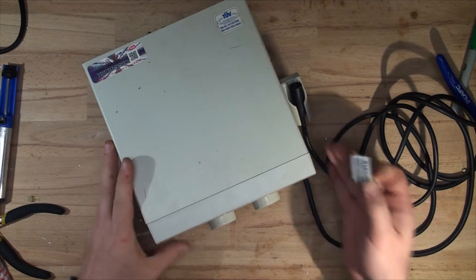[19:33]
So, all right. There we go. So that's at 33 kilohertz. And that's working fine. So if we connect the tip, we'll use the same tip. And let's see, let's get a screwdriver. You can hear the noise. So it's working fine. The device is done and it's working.
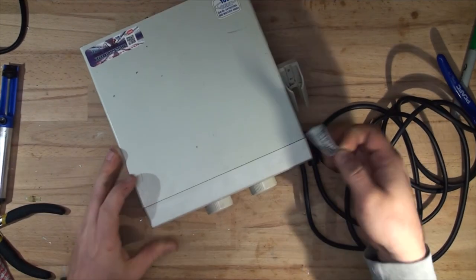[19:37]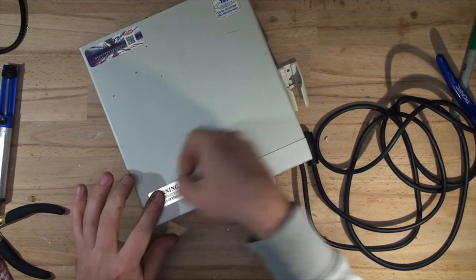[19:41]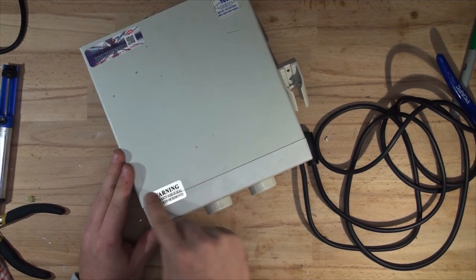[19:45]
All that's left to do is to add the warranty label so no one tampers with it. Those labels are great. If you remove it, it leaves a little void sign, so you know that people have removed it before. There we go. So device is done.